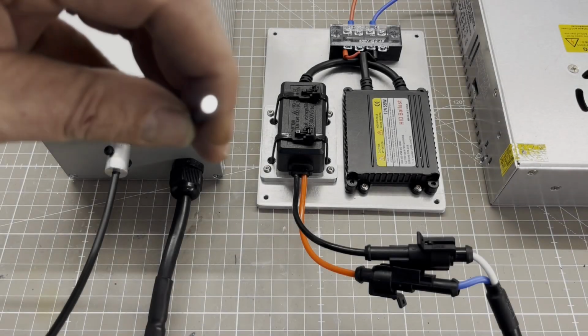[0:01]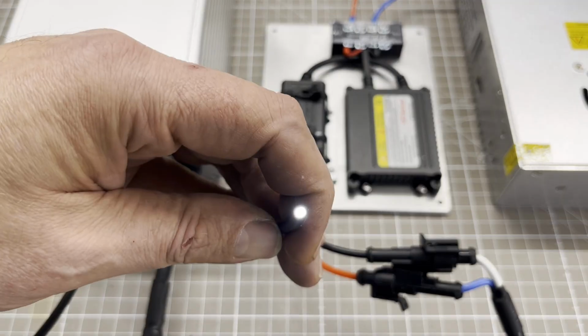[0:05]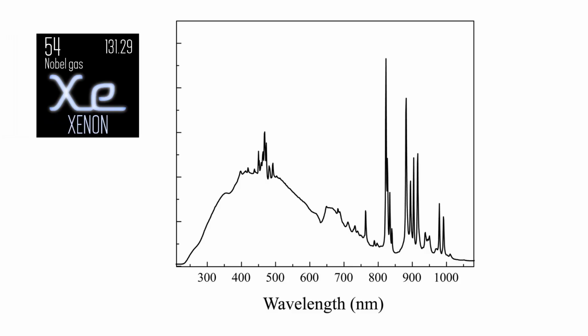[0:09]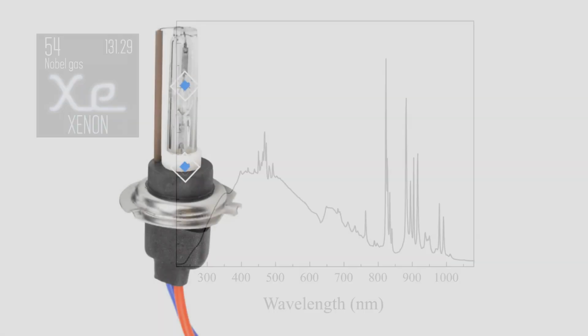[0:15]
In today's episode, I will show you my homemade xenon light source for spectrometry. Xenon light is preferable to halogen because it has a broader spectrum and specific peaks that can be used to calibrate the spectrometer. I use an H7 xenon bulb from the automotive sector because it's very inexpensive and readily available.
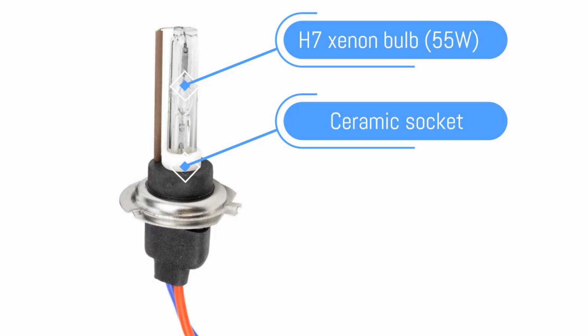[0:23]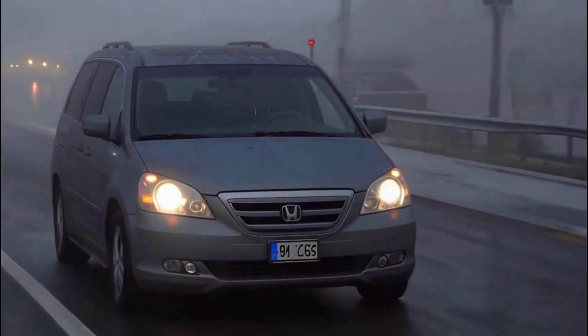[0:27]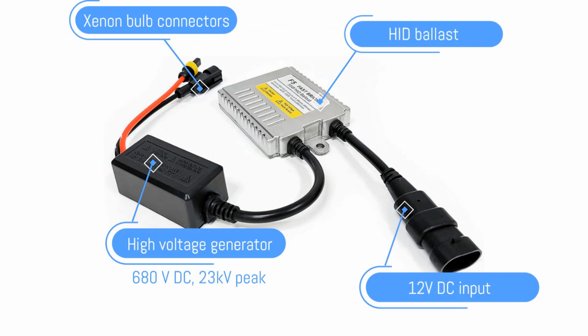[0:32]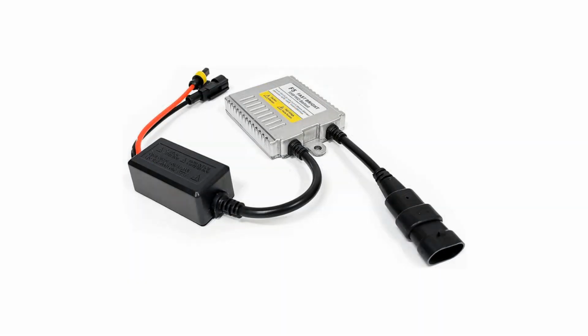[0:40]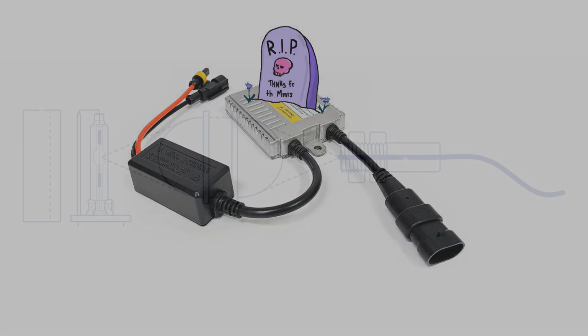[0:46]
If possible, it should have a ceramic socket. The H7 is normally used as a front fog light. Unlike halogen bulbs, xenon bulbs cannot be operated directly with 12 volts. A special ballast is required, which is also very inexpensive. A lesson I learned: never operate the ballast without the bulb, otherwise you'll immediately see blue smoke.
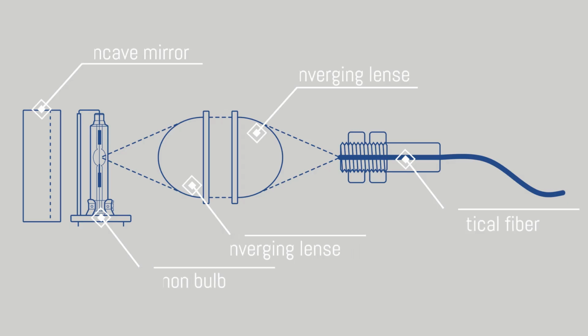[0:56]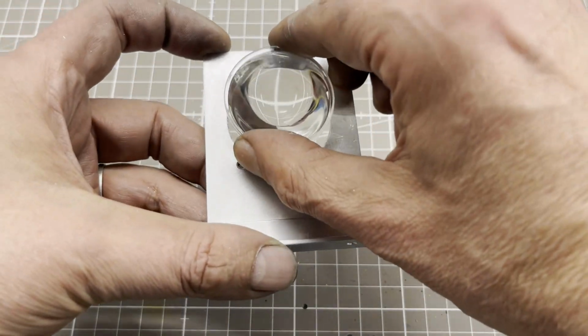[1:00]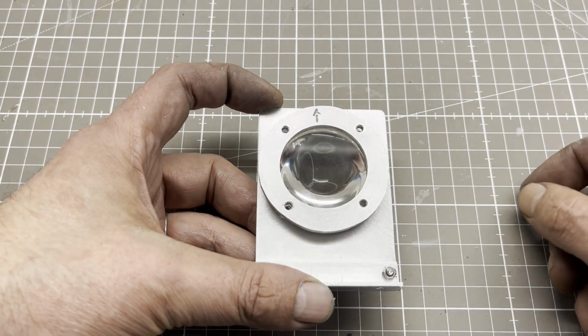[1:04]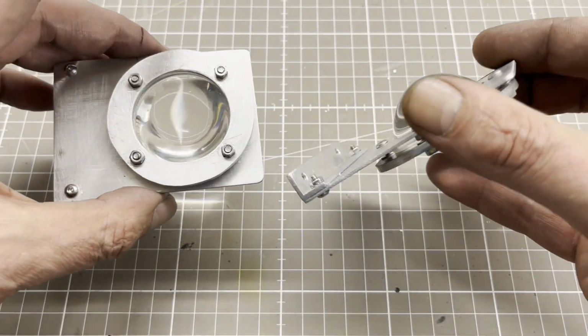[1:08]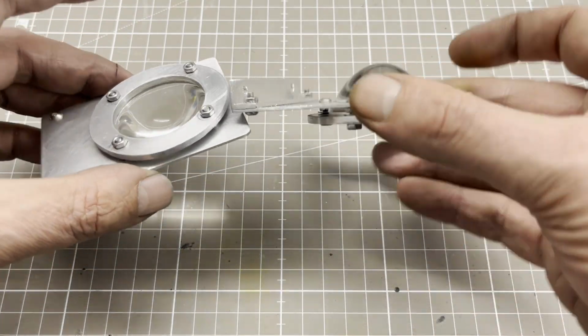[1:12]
First, I build an optical bench consisting of a concave mirror, the aforementioned xenon bulb, two identical converging lenses, and an optical fiber. The lenses are made of borosilicate glass. Quartz lenses would be better in terms of UV transmittance, but they are very expensive. Since I don't own a metal lathe or mill, building the optical bench was a challenge.
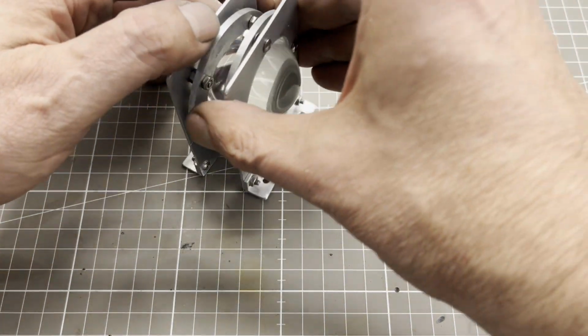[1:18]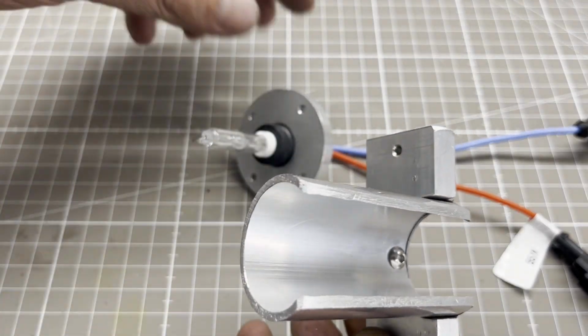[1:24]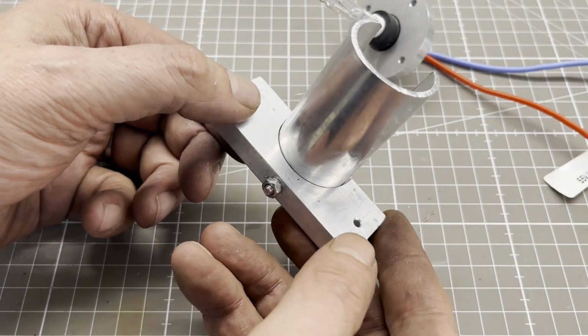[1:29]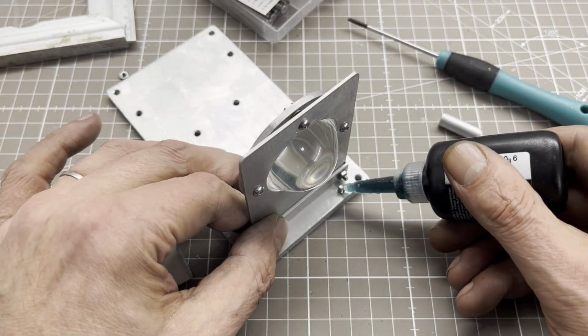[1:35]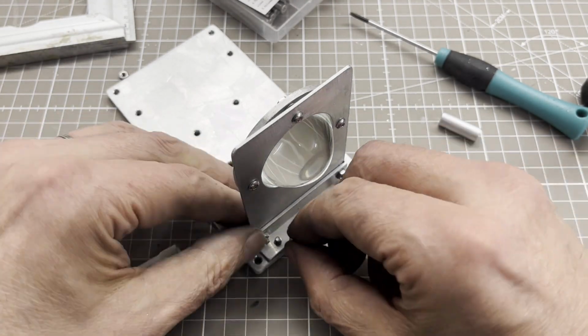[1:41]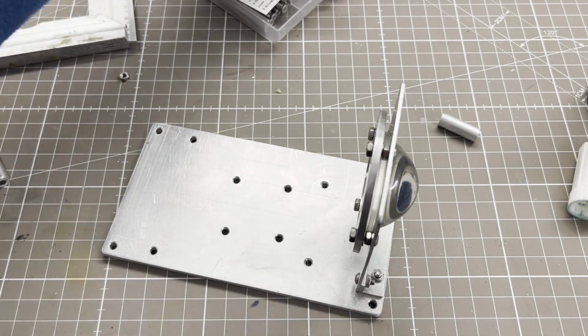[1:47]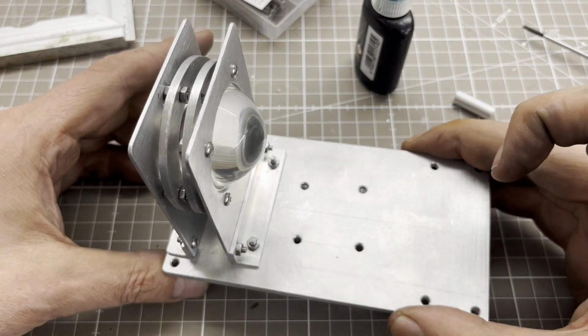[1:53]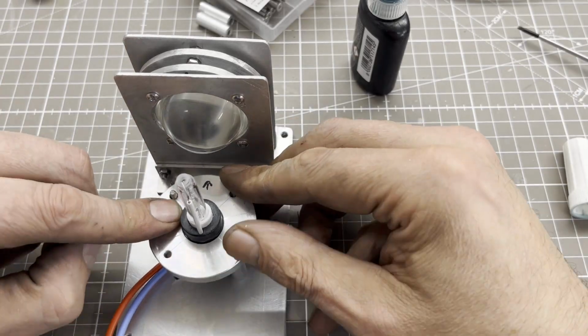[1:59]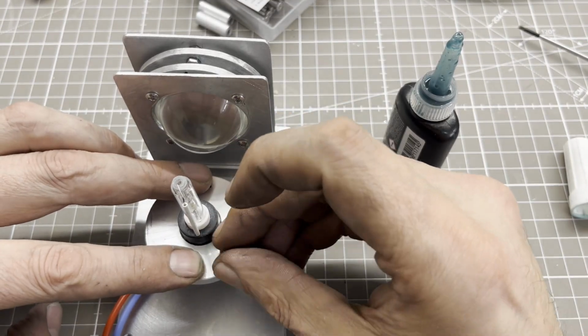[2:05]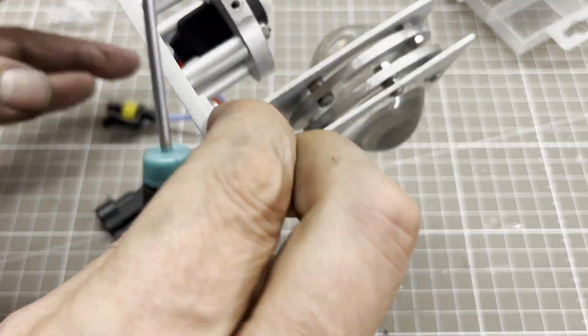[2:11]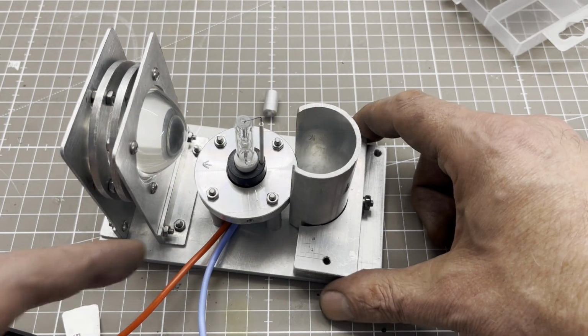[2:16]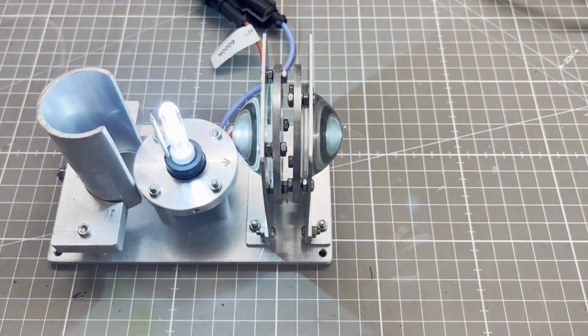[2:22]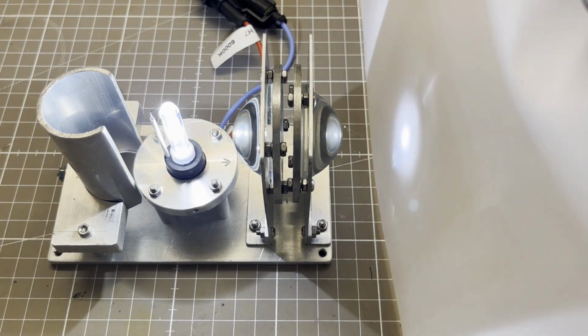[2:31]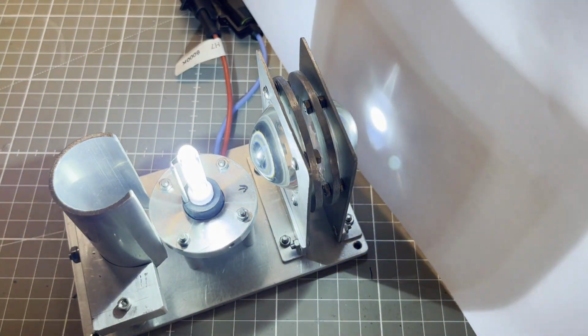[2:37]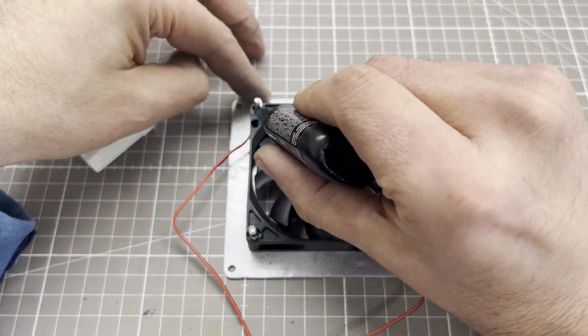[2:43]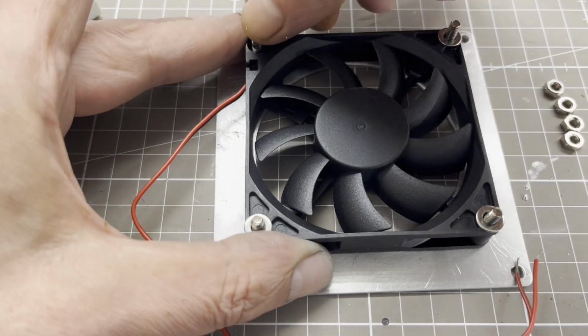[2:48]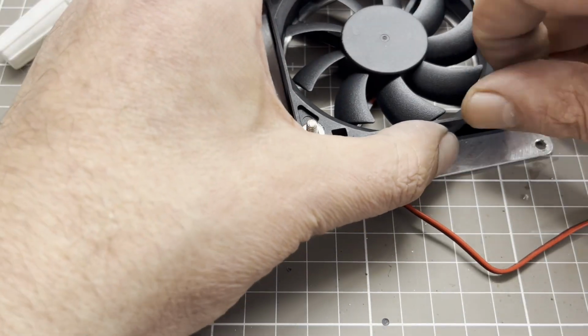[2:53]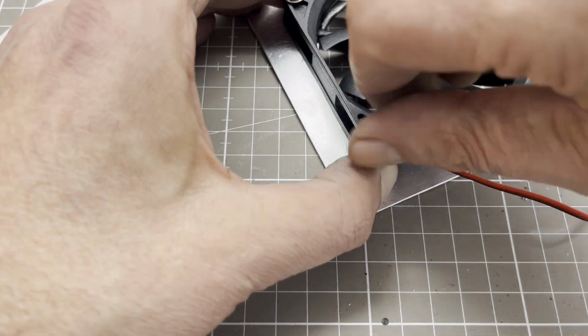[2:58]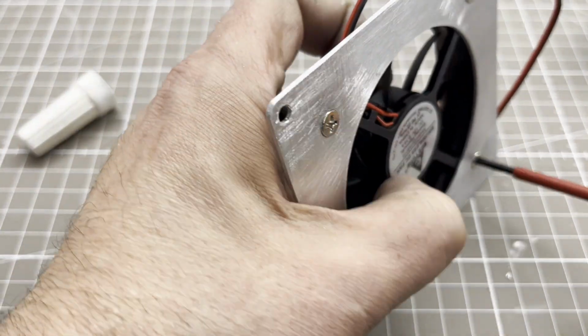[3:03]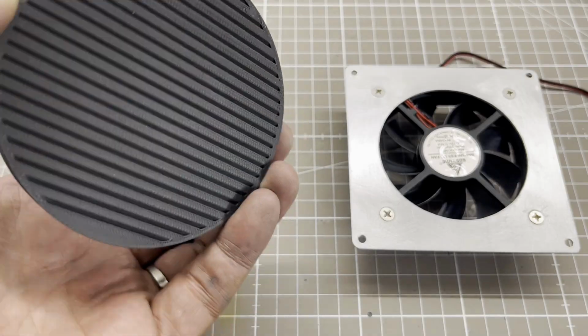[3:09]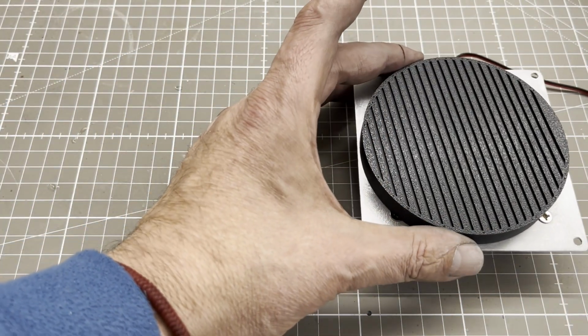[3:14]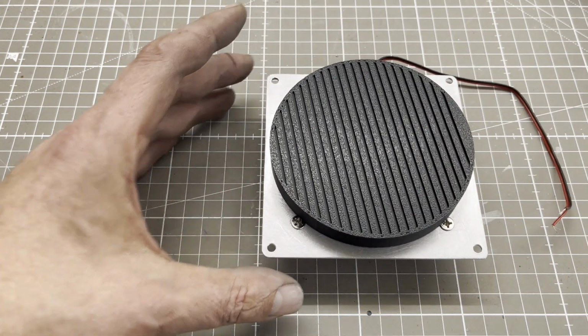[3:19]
Since the optical bench must be housed in a light-tight enclosure, a fan is required for heat dissipation. As light can enter the housing through the fan, a light trap is required. These are available on eBay or Amazon in different sizes, with or without a flange. I use one without a flange with a diameter of 100 mm.
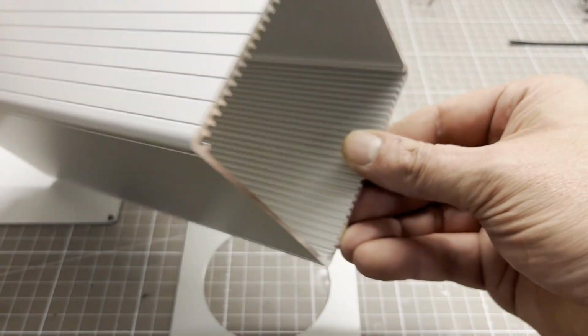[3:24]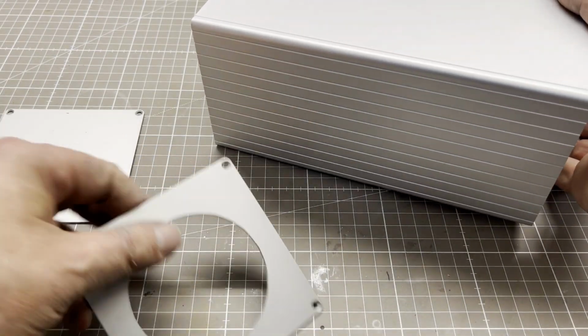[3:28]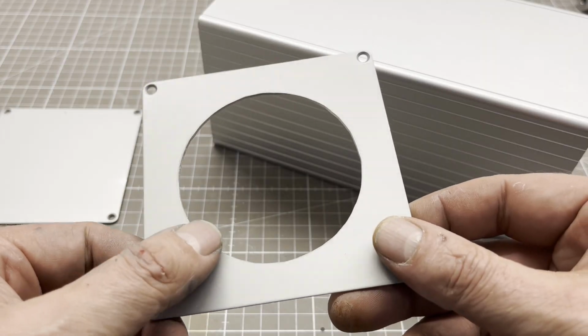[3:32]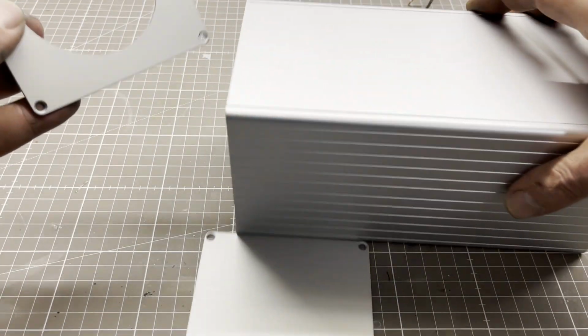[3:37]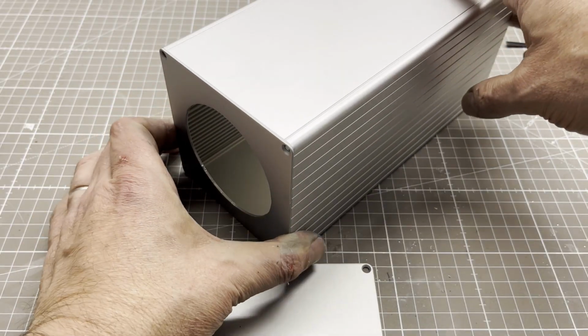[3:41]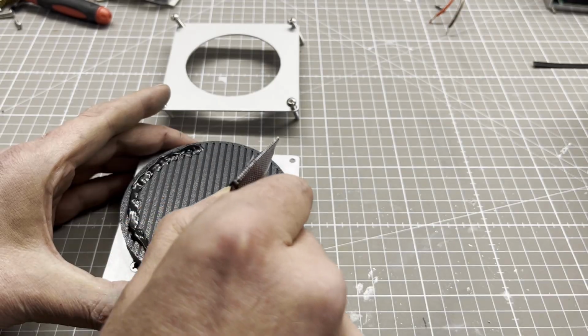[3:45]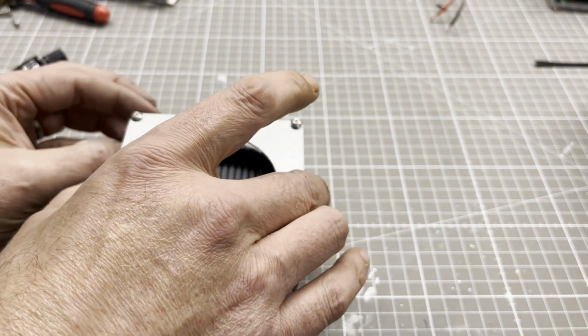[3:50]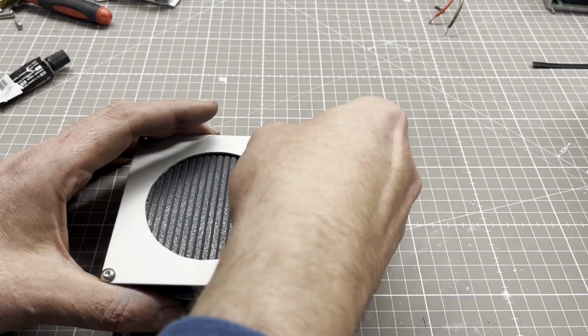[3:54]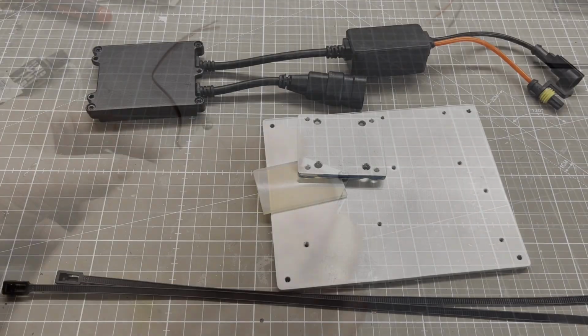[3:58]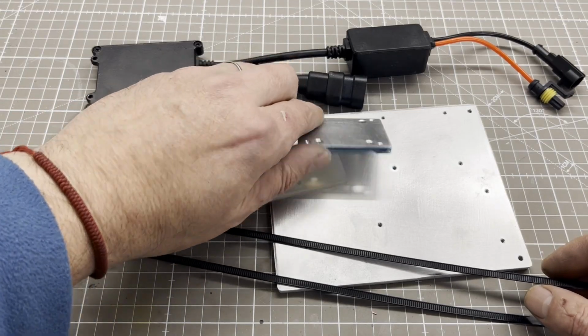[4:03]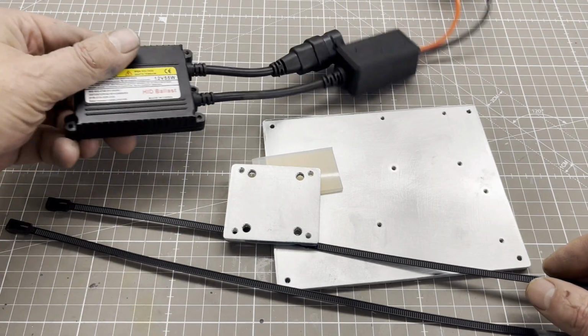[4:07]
I use an enclosure made of extruded aluminium. They are available in many different sizes and designs. The light trap is sealed and mounted by using black silicone. I toyed with the idea of placing the ballast in an enclosure as well, but then decided against it and mounted it on a 5 mm thick aluminium plate.
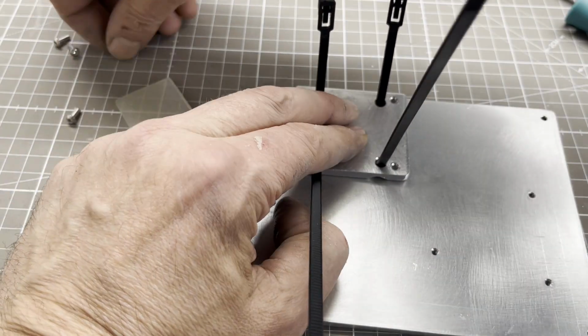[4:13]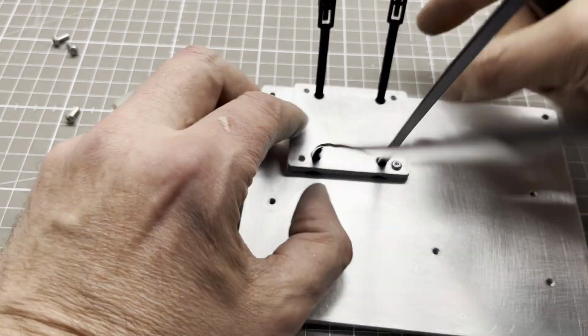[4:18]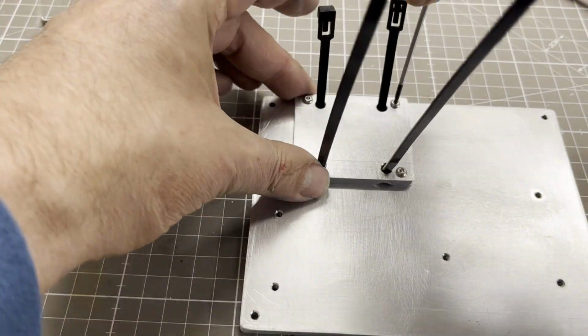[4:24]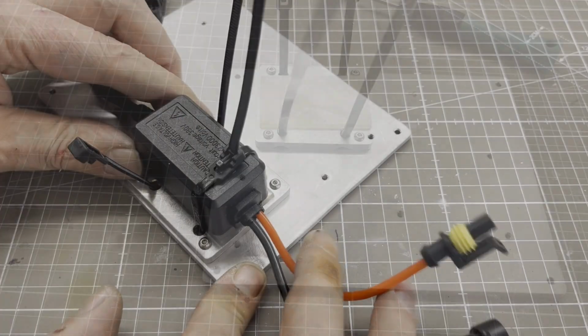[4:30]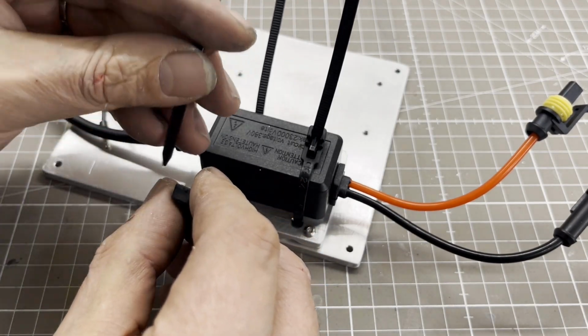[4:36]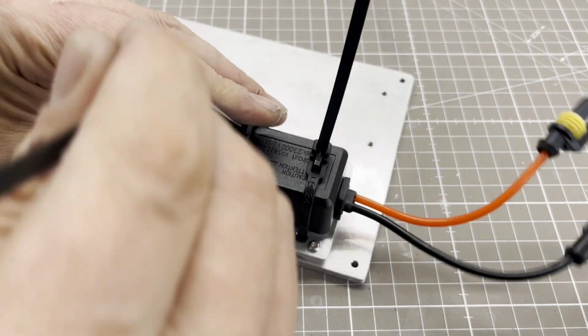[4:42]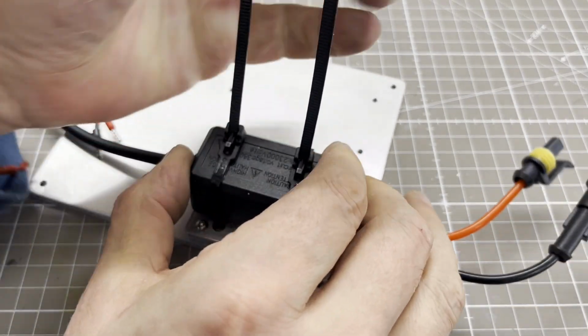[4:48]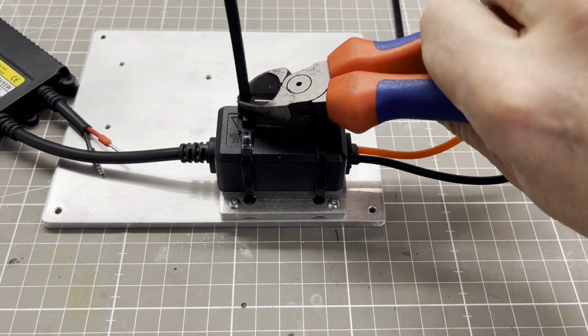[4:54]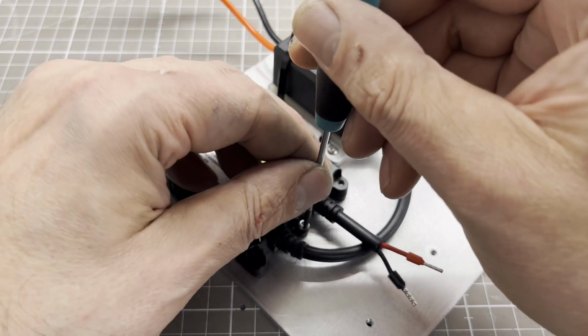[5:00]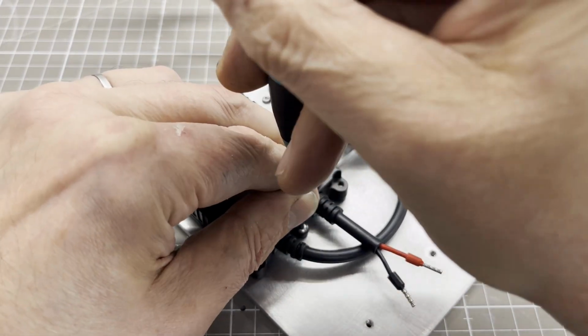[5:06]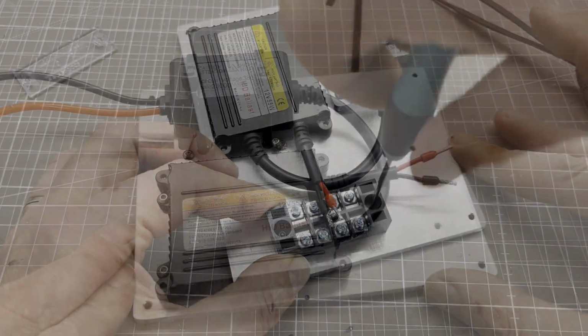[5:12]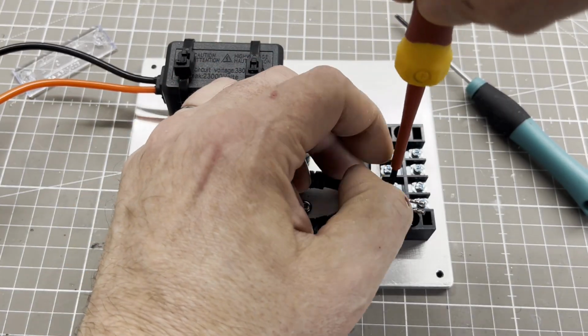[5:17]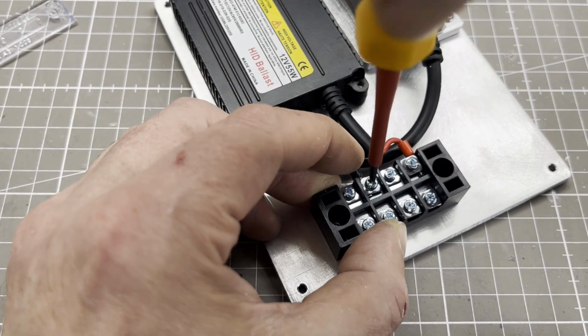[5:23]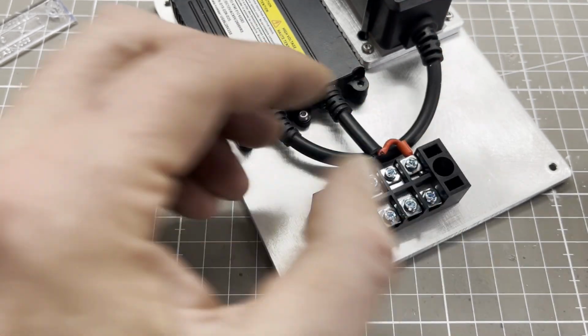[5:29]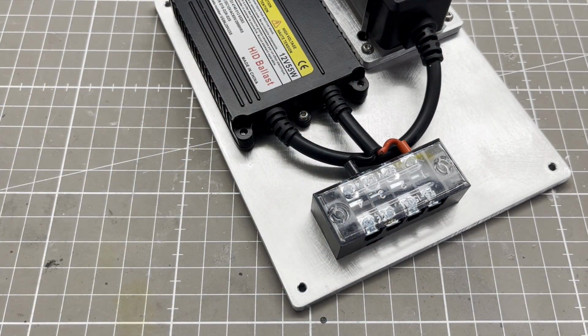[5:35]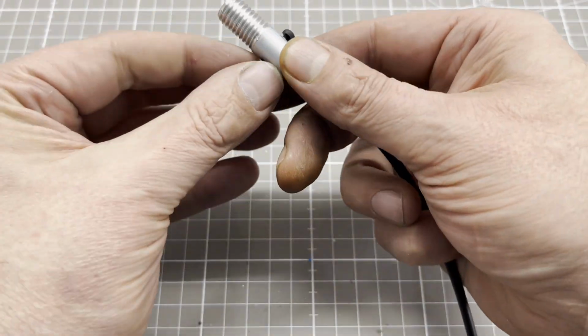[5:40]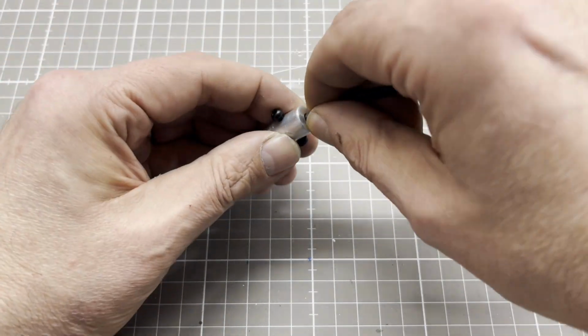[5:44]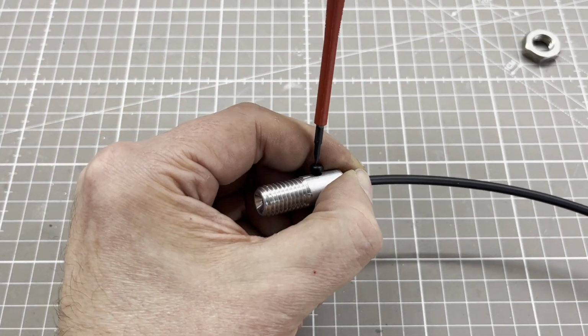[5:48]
I also built the adapter for the optical fiber myself. The optical fiber is made of a special PMMA, which transmits UV light as well. It has a diameter of 3 mm and is coated with black PVC.
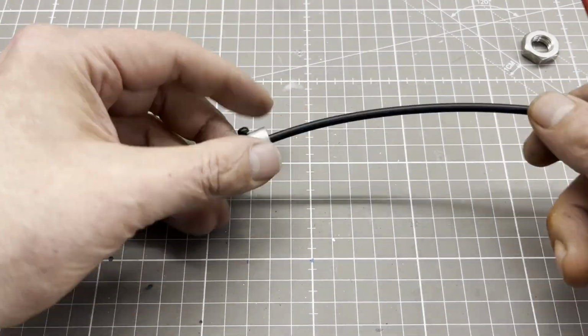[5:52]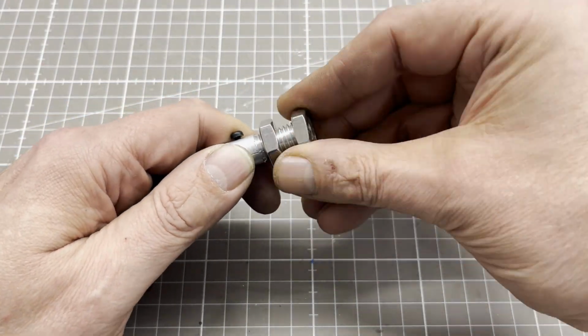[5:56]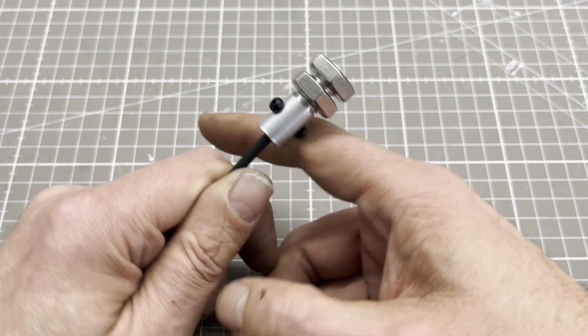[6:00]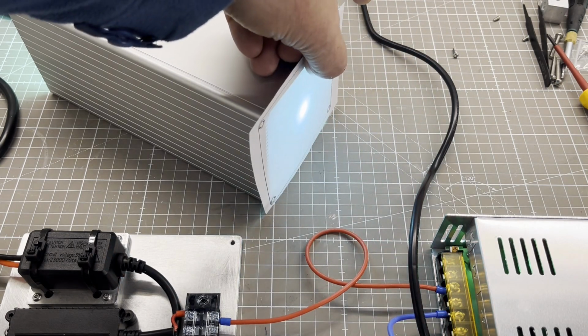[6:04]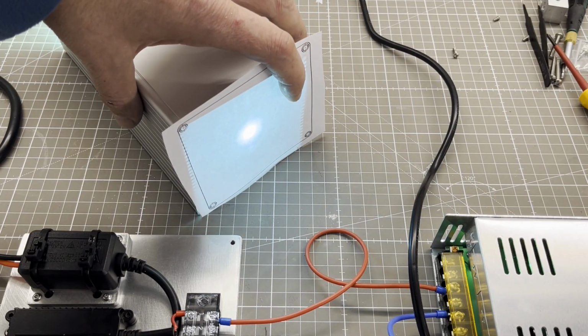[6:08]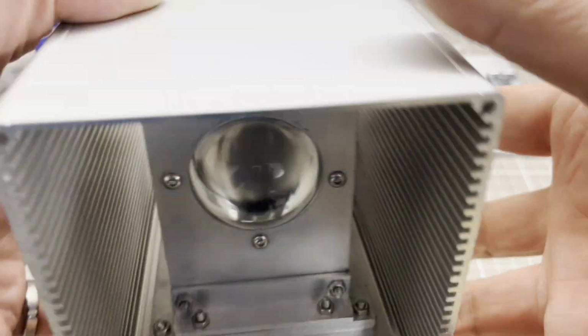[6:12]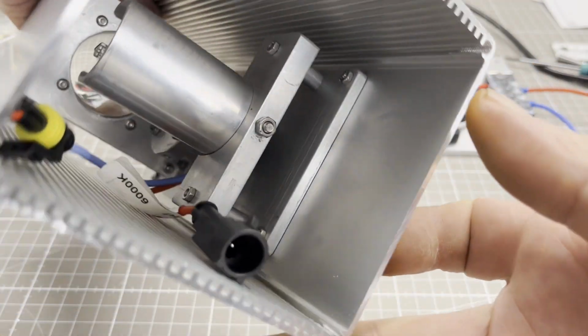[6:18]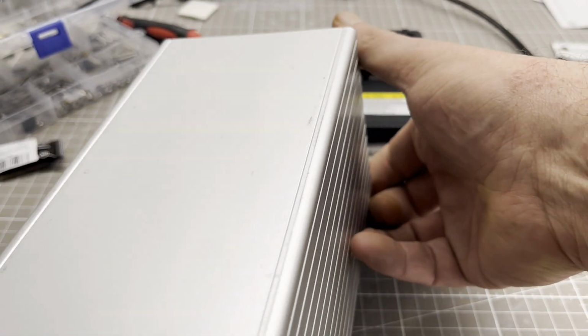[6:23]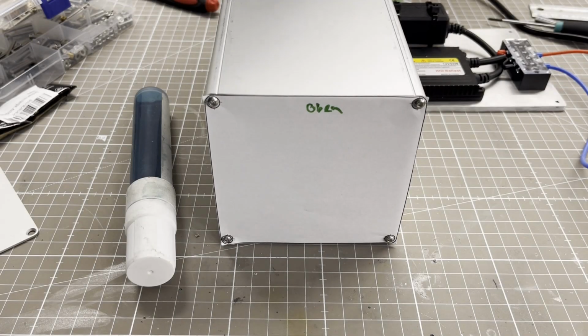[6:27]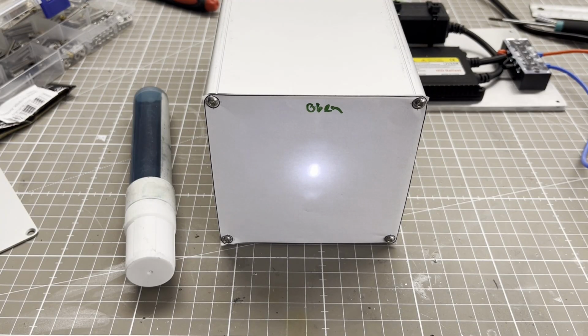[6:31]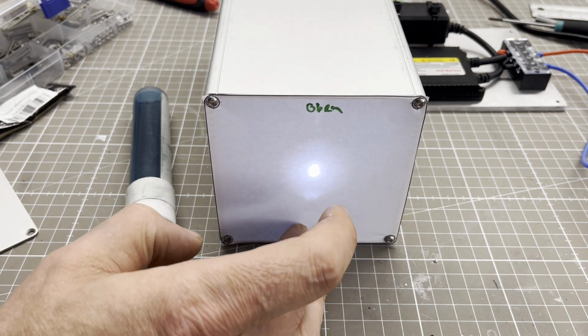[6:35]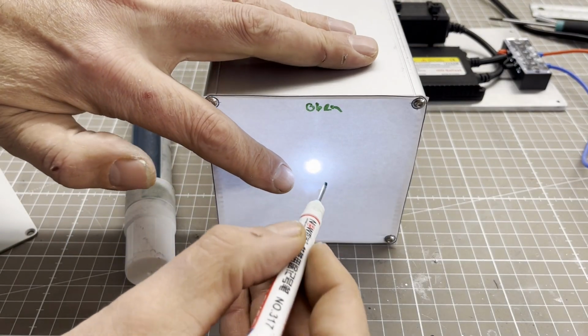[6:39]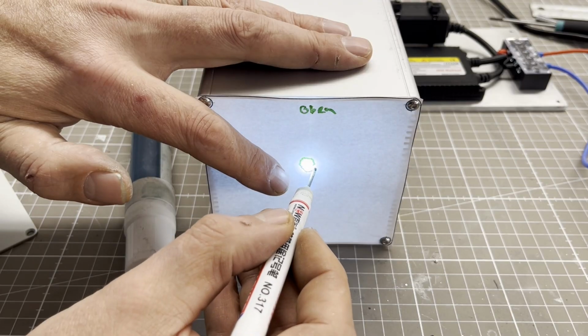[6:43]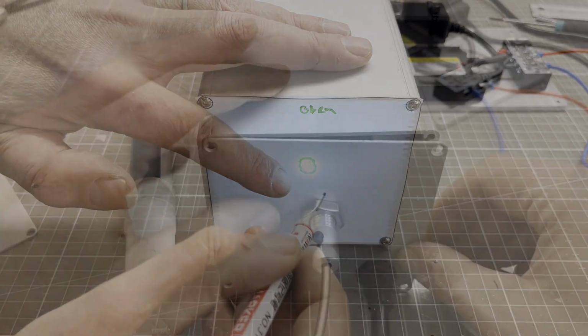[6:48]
I then determined the position of the optical bench in the enclosure. After that, the optical bench was mounted. To determine the exact position of the optical fiber adapter in the front panel, I used a paper template again. Then it was time for the final assembly.
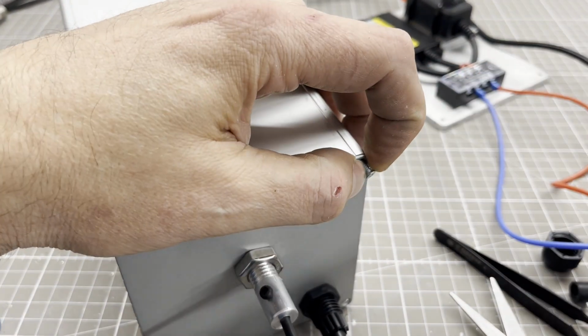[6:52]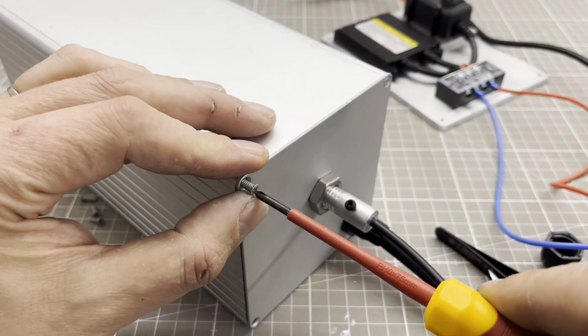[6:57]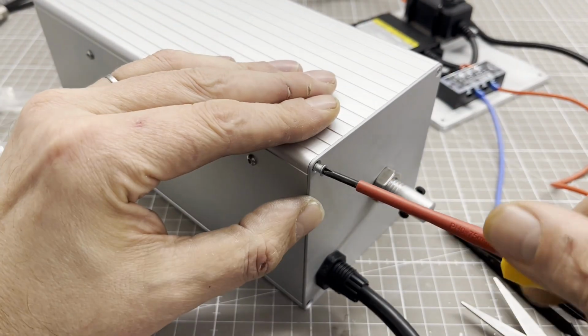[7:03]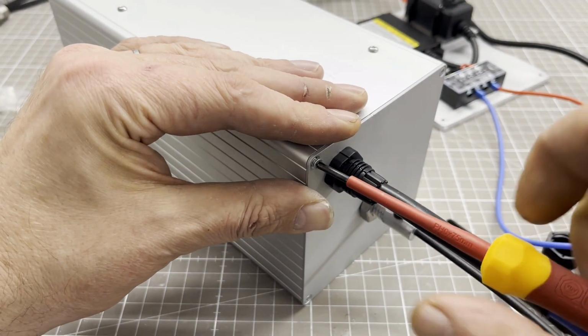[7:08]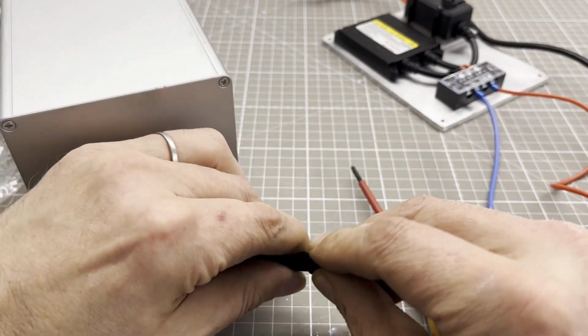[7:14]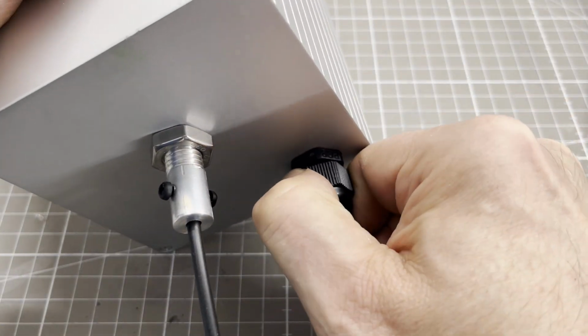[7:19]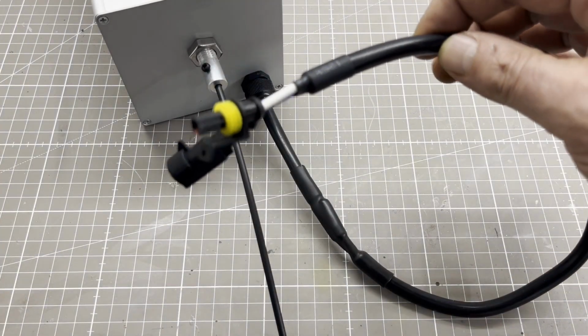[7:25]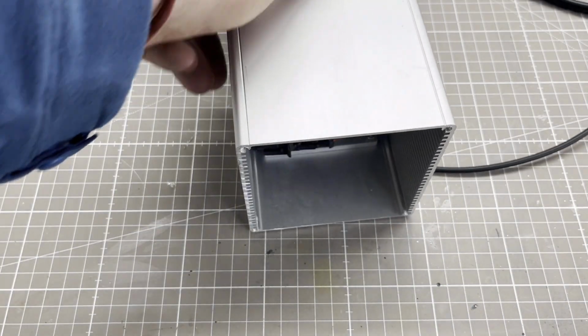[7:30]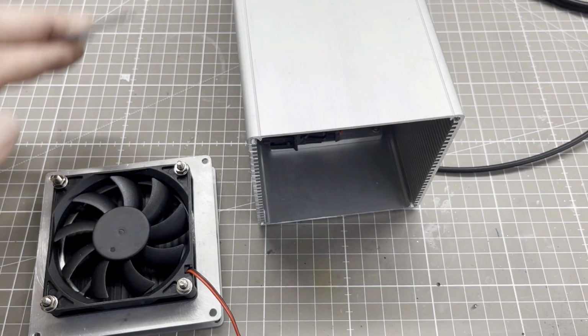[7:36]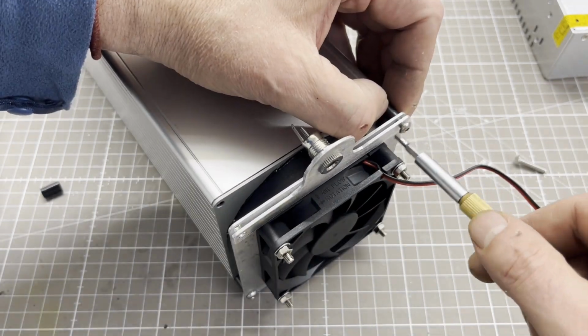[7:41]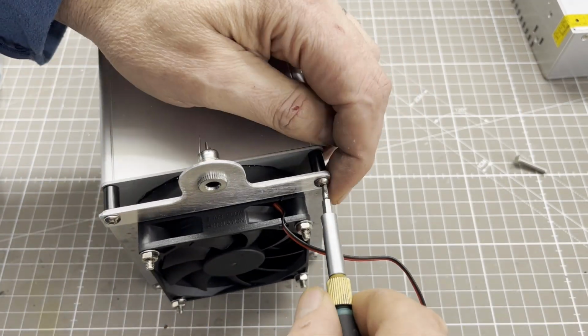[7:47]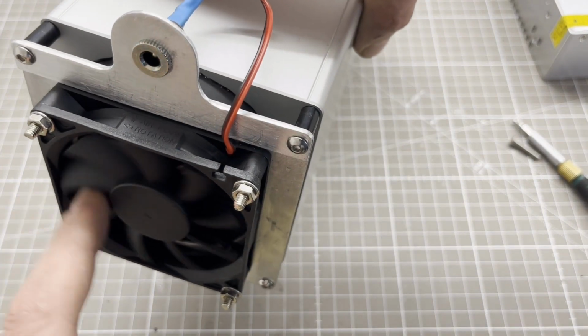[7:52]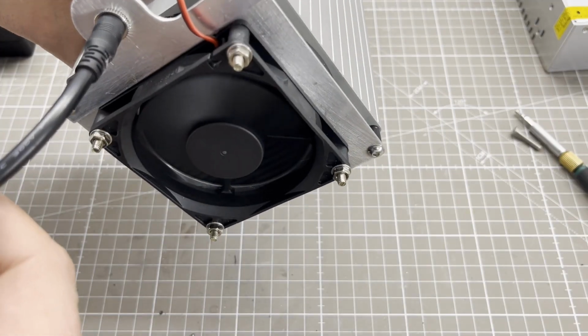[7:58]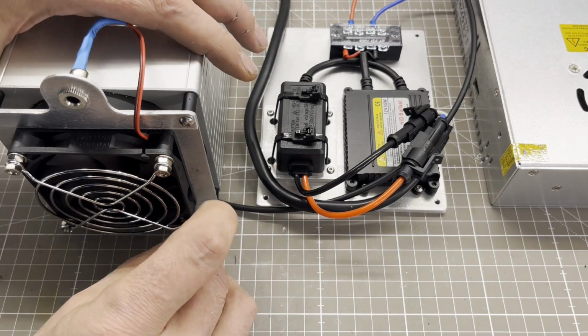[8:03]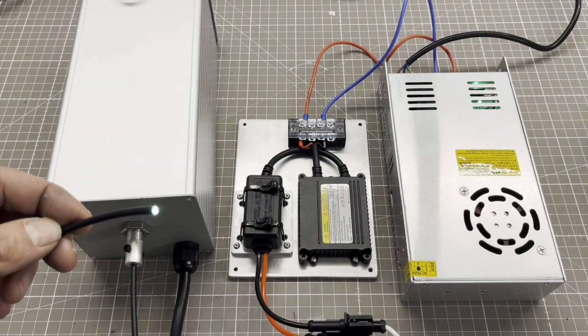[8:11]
Thanks to the fan and the solid aluminium enclosure, the temperature does not exceed 30 degrees Celsius.